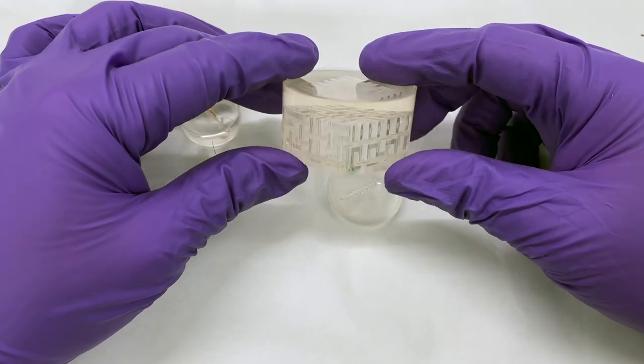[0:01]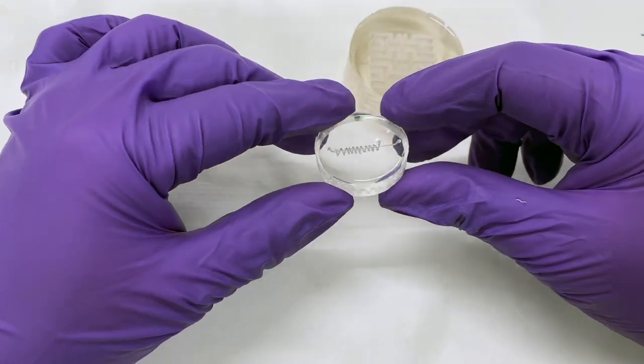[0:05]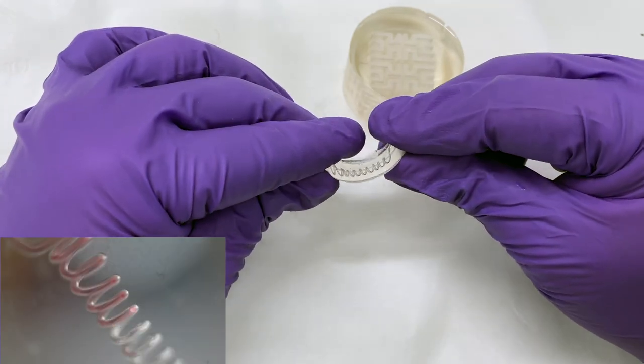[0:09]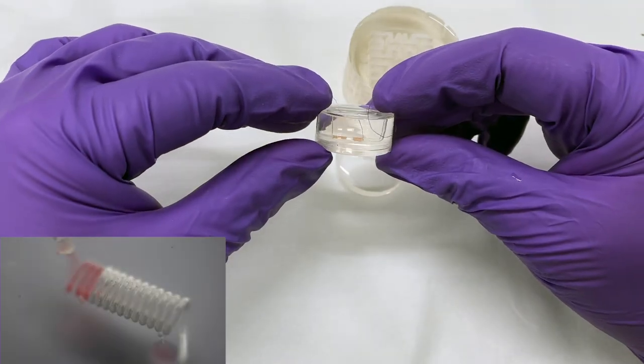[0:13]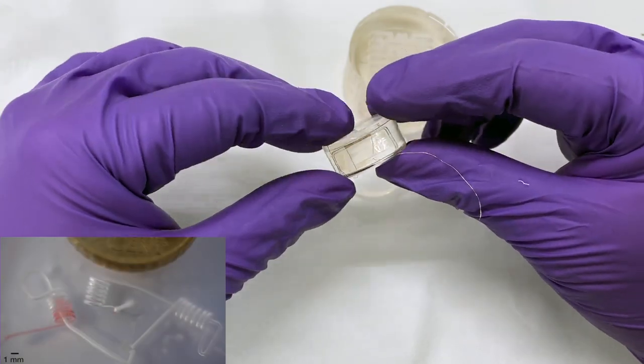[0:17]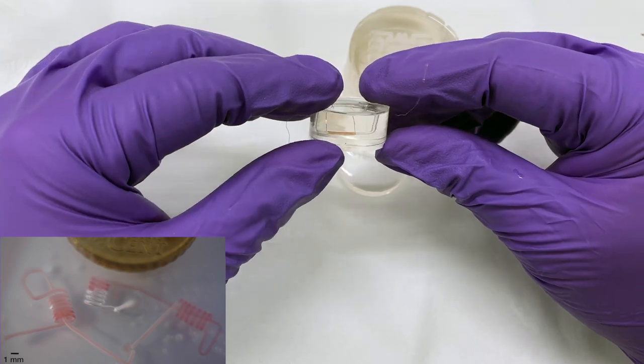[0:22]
Okay, this is a video I wanted to do for a very long time, and it's about how to make microfluidics. If you don't know what I'm talking about, you can check this video up here. Five years ago, we developed a method for making microfluidics in a very simple, easy and cheap way, in which you just need some ABS, PDMS and some acetone.
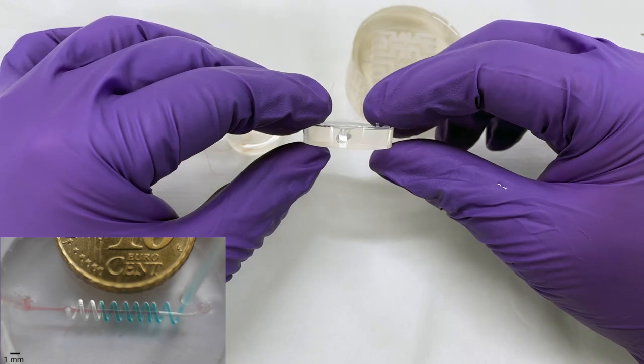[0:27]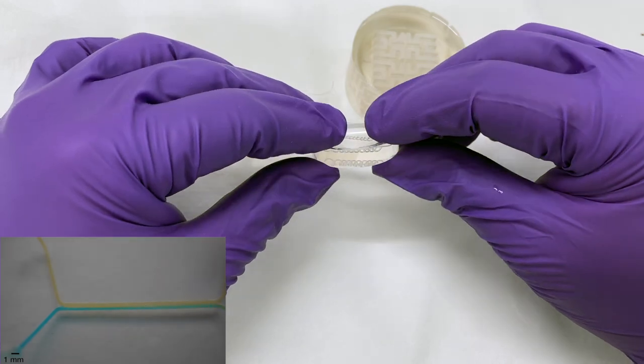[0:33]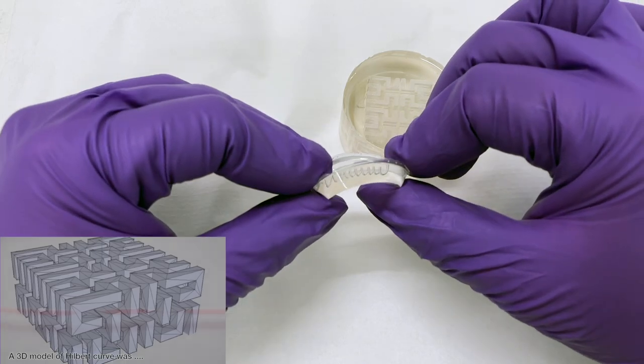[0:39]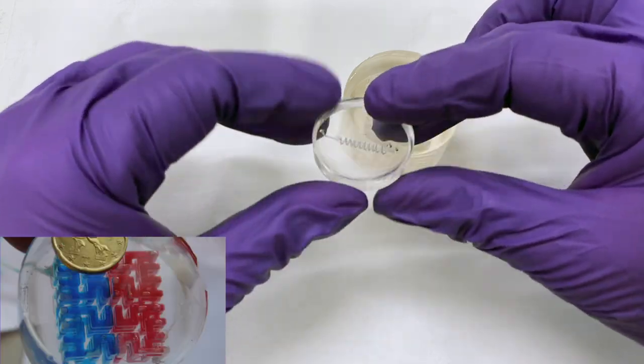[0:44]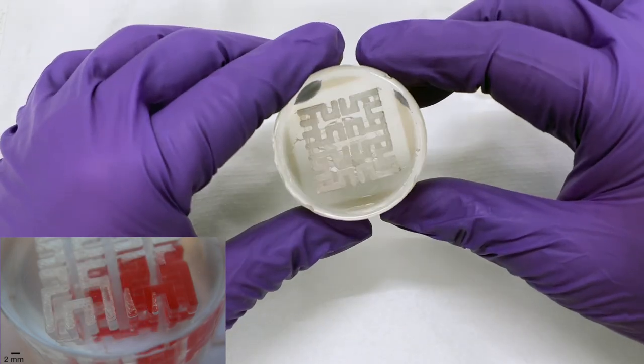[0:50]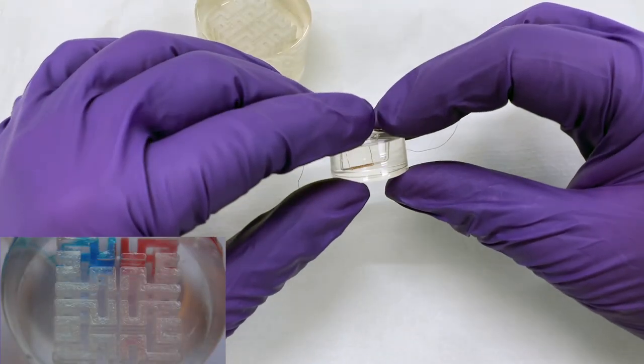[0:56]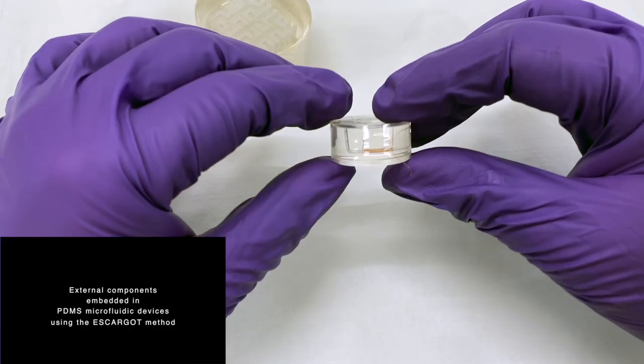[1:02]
So, the general idea is that you put some ABS in uncured PDMS, you cure it, and then you dissolve the ABS with acetone. With this method you can make a lot of 3D microfluidics, and also very intricate microfluidics. The method is very easy, and it has been used multiple times by different people, but every week I get an email asking some question on the method, so I want to make a video explaining practically everything, or at least the most frequently asked questions. So, let's go!
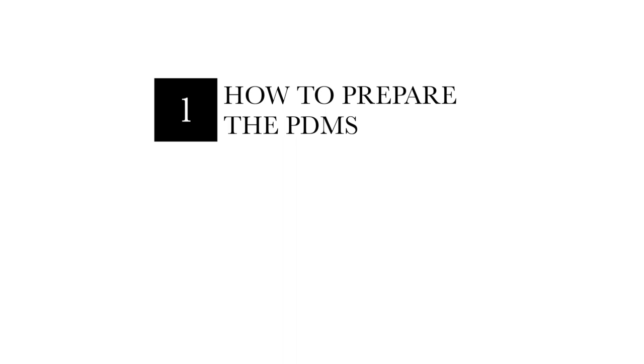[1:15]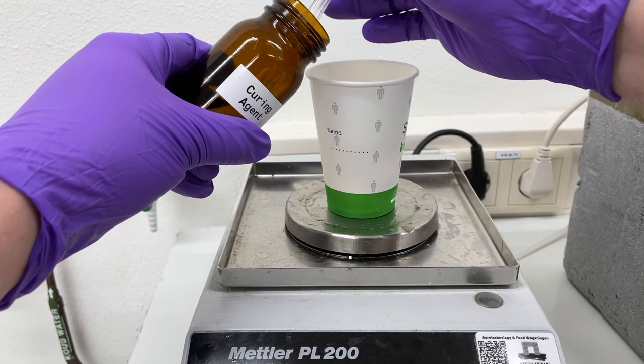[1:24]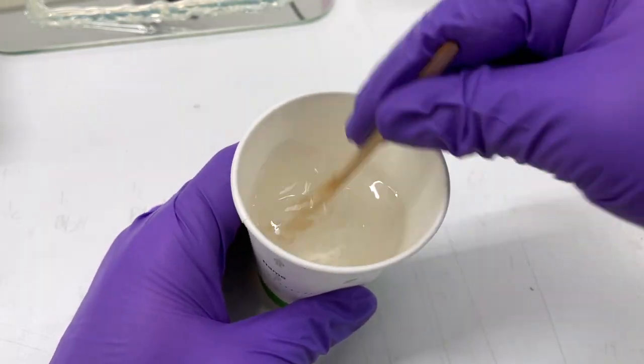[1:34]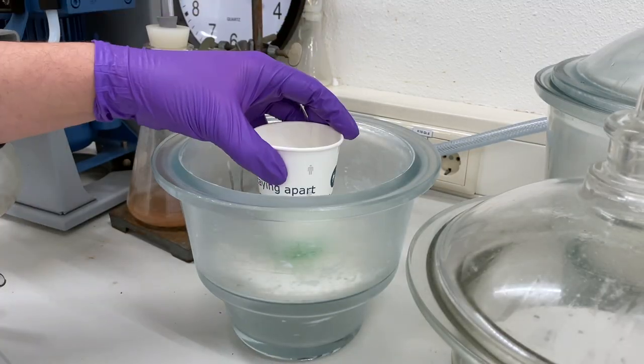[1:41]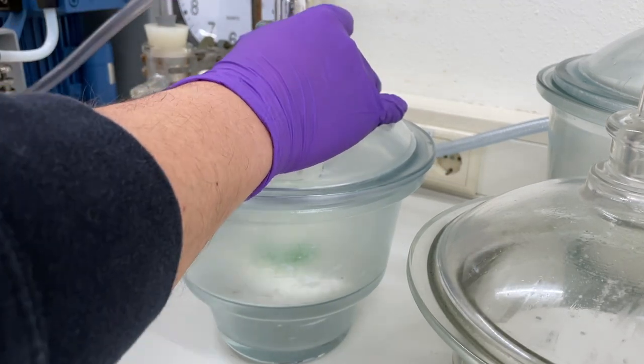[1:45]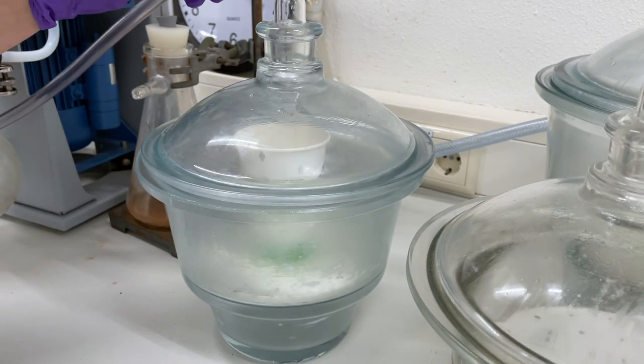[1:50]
First of all, how to prepare PDMS. You pick up your PDMS, put it in a cup, and then add your cross-linking agent. The standard is 10 to 1, so 10 parts of PDMS and 1 part of curing agent. Then you mix it very, very well for at least 5 or 10 minutes, and then you degas it. The degassing is for removing most of the air bubbles trapped in the PDMS, so your microfluidics will look clean and there are no bubbles in the PDMS.
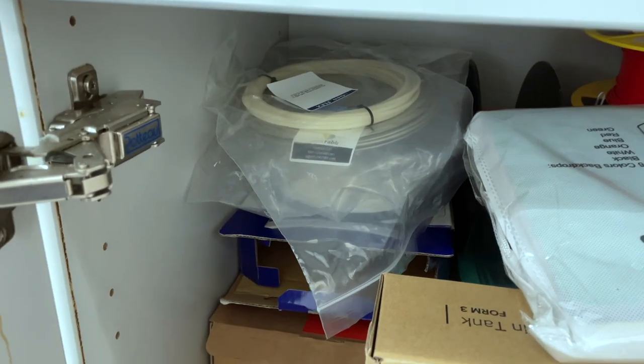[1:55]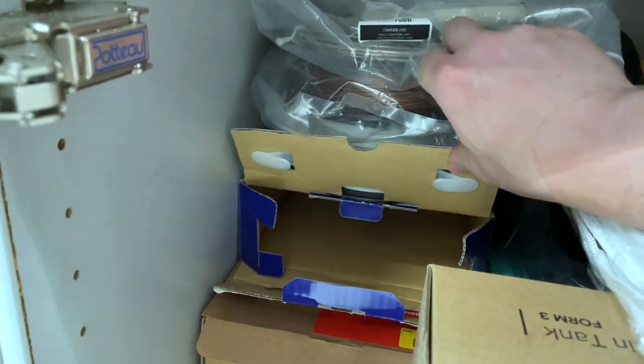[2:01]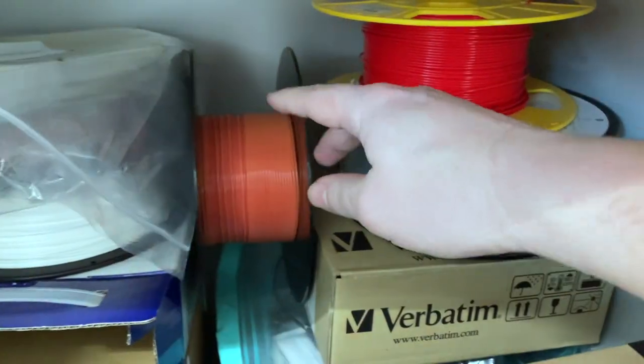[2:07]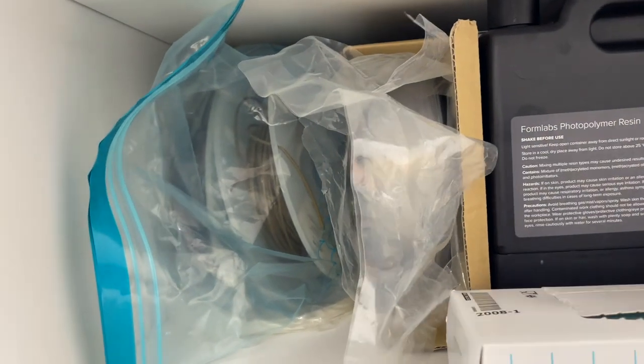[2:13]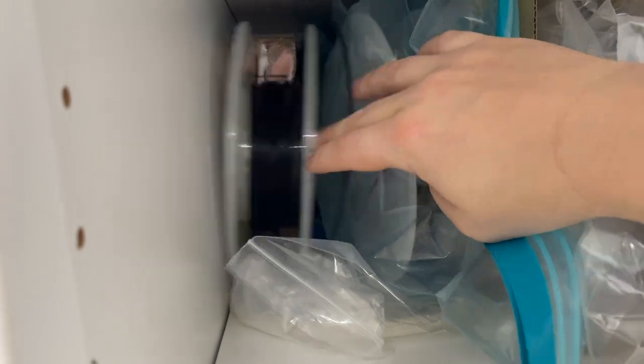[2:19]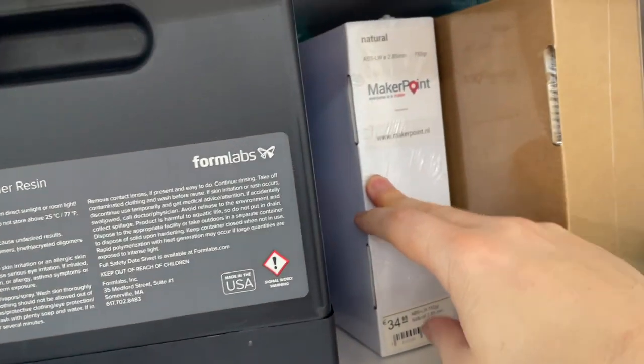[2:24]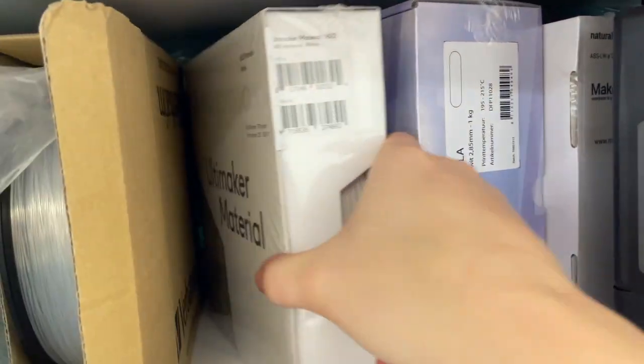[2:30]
The second most asked question is usually, my ABS doesn't dissolve in acetone. So I prepare my microfluidics, I leave it in acetone, but then nothing happens. Unfortunately, this is something we saw in the last couple of years. Producers of plastic started putting other polymers inside the ABS, so the ABS is not pure and then it doesn't dissolve anymore. As a rule of thumb, we found that the cheaper the ABS, the better it dissolves in acetone. So, if you are undecided, buy the cheapest ABS that you can find on the market.
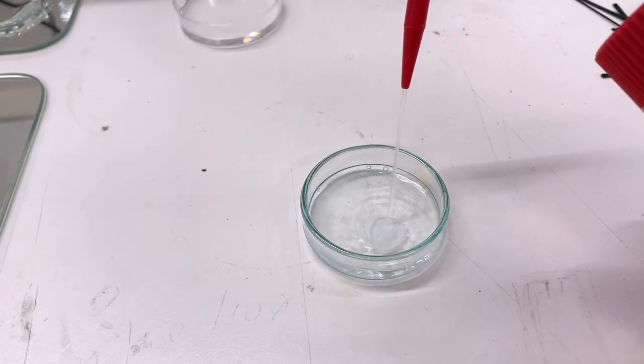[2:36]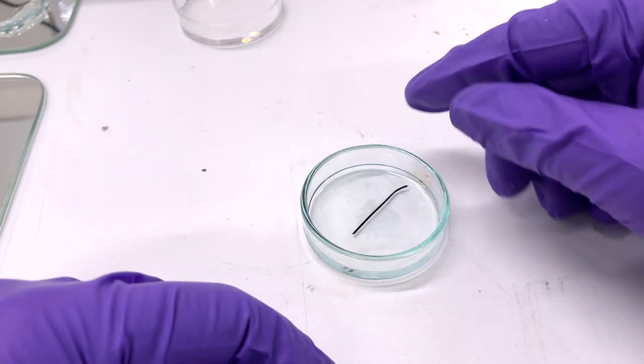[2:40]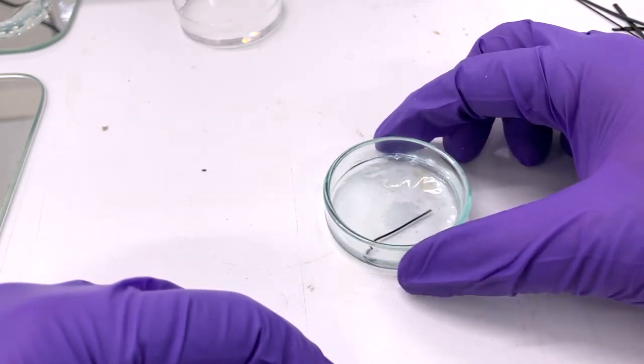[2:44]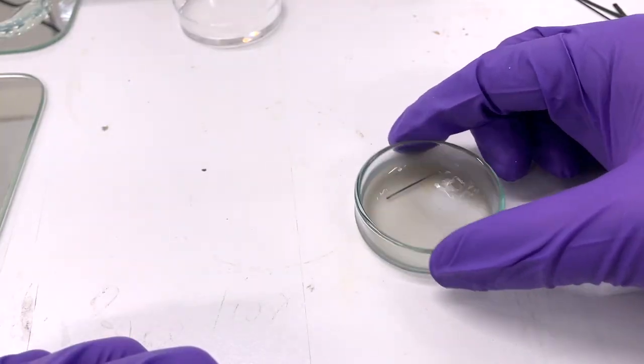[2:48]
And naturally, the easiest way to check it is to pick up some piece of ABS, throw it in acetone and check if it dissolves. If it dissolves, then you are ready to go. If not, just buy another brand of ABS. Easy peasy.
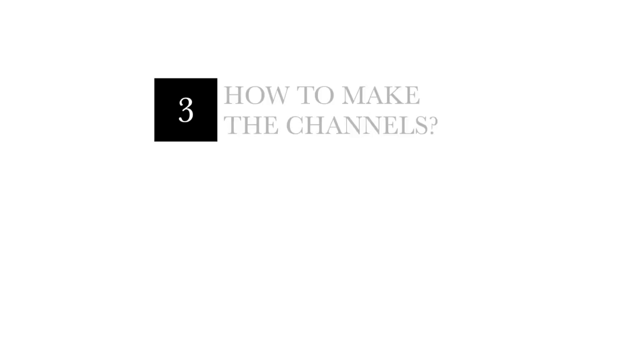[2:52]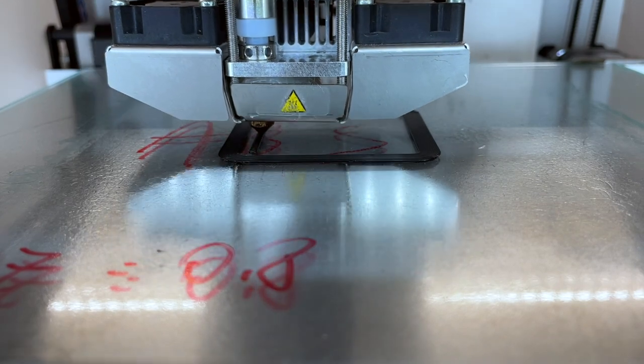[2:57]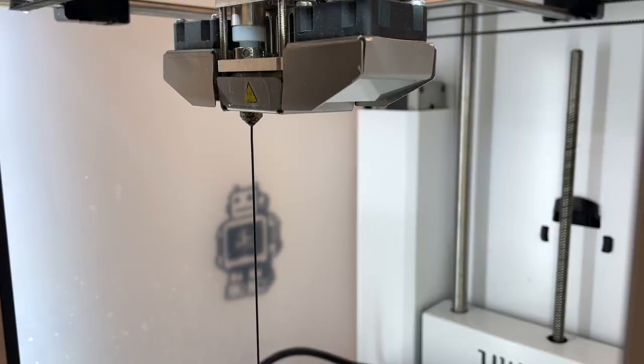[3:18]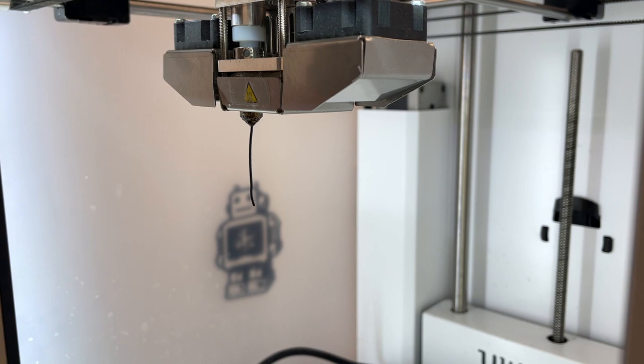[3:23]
Then, how to make the microfluidics design. This method was born for use with a 3D printer and ABS, so naturally the first thing is that you can 3D print it. If you can design it, then you can just 3D print it in ABS and use it as it is. But there are some other methods, let's see. For example, you can just extrude the material through the nozzle and you can have different sizes. If you are using a 0.6 mm nozzle, you will have roughly a 0.6 mm channel, but you can also go for 250 microns or 1 mm.
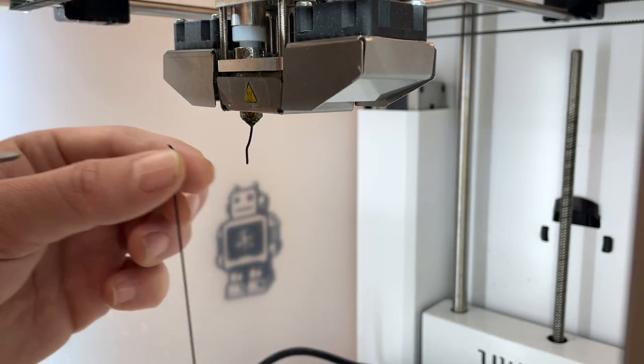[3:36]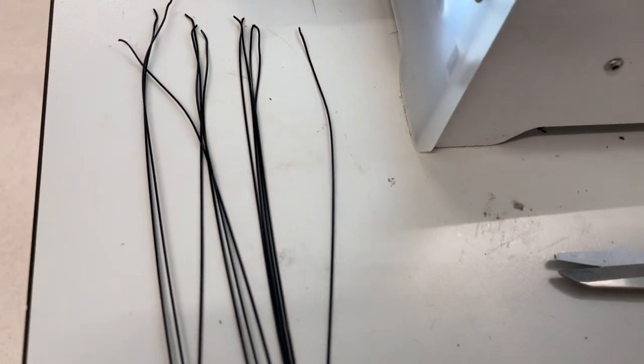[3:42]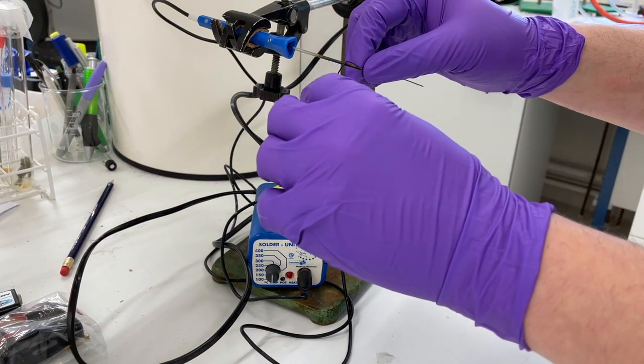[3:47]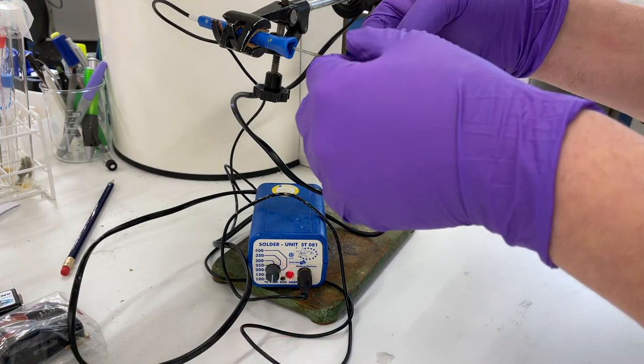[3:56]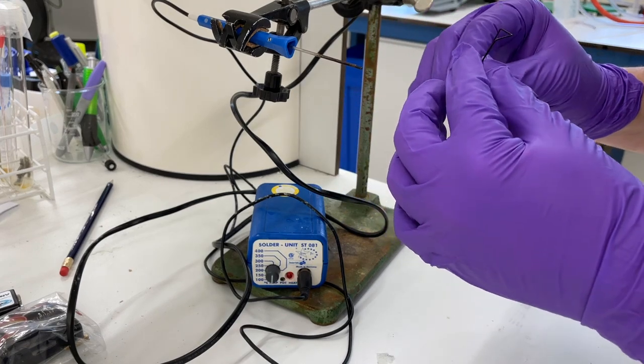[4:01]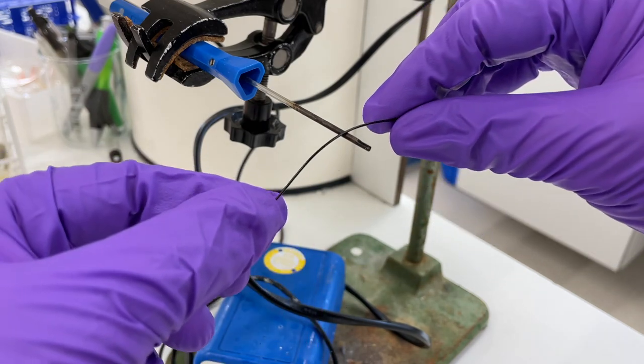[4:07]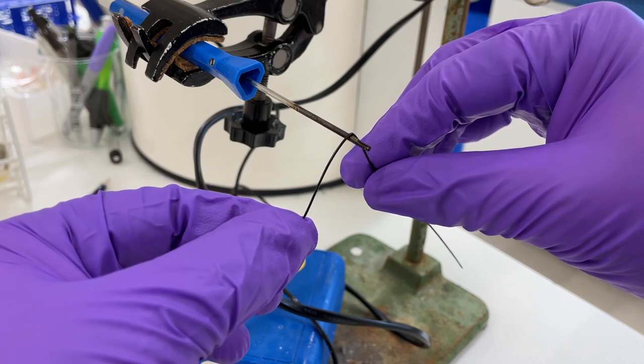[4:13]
In this case I'm just extruding the material, cutting different lines and letting them cool down. Once I have my extruded filament in the diameter that I want, I can use a soldering iron at the lowest possible temperature for making my design. I'm just using the heat for shaping the channel that I want. This is important because if you just bend the ABS and then put it in the oven in PDMS, it will go back to its initial state. So you want to melt it a little bit to give the proper shape to your channel.
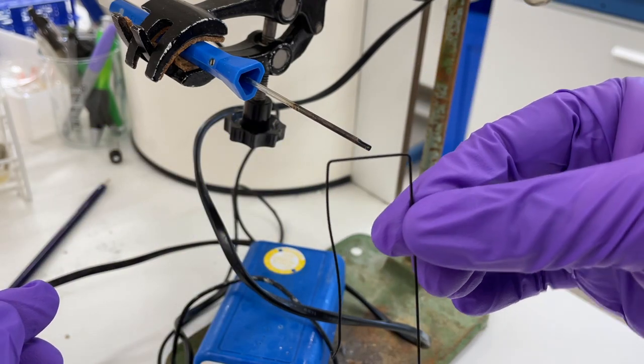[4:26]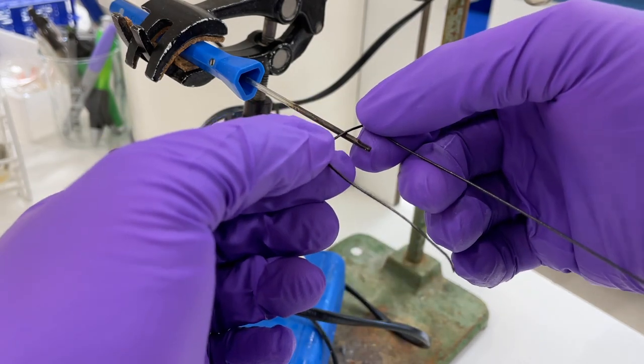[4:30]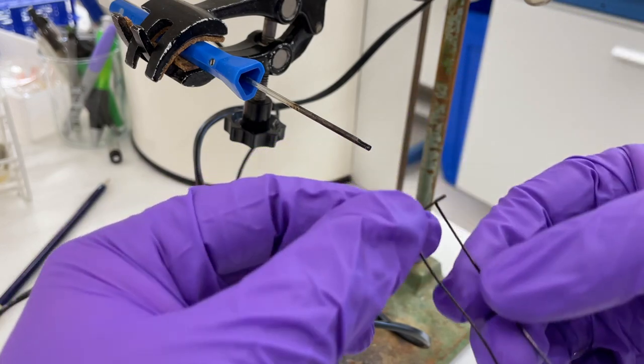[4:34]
In this case, I'm just warming it up to 100-120 degrees. Then I pick up my filament and make some curves. Once it melts, it will stay in that position even in PDMS and in the oven. And this is what you want to have.
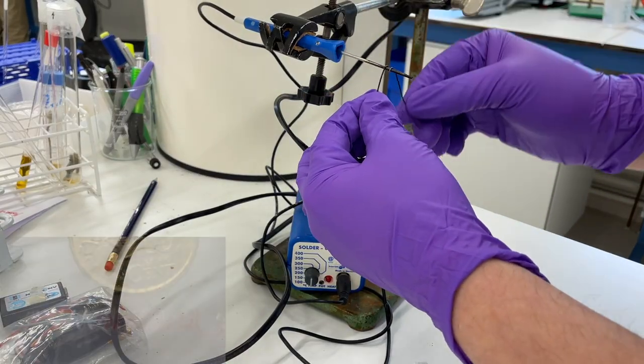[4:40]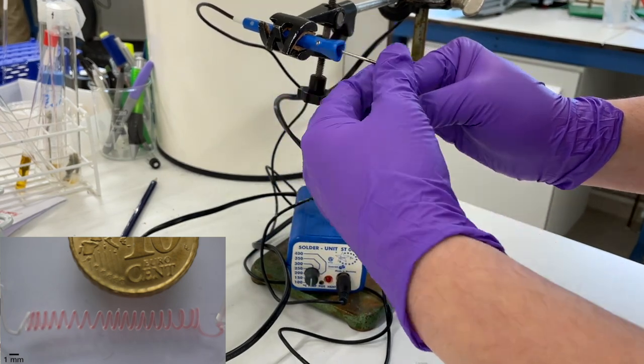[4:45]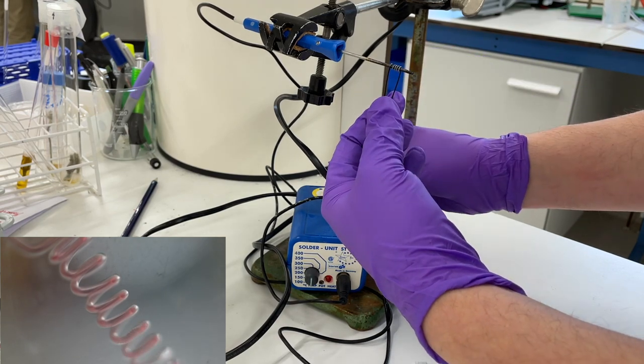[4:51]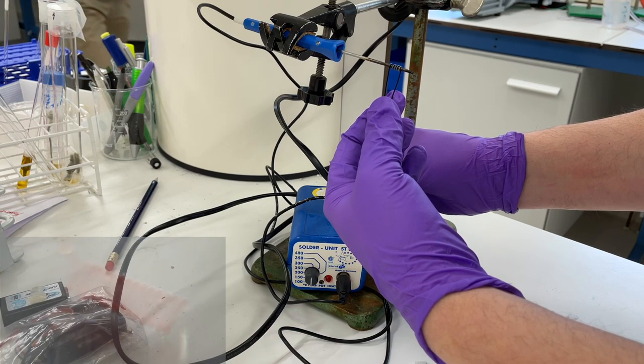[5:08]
Many people ask how we manage to make the coil microfluidic device. In this case, I'm still using the same soldering iron. I make the coil on top of a cold soldering iron, then I turn on the heat and wait until it gets the shape that I want. In this case, it's a coil. When it melts, I keep the ABS in the same position and turn off the soldering iron. I wait a little bit until everything is cooled down and I have my final shape.
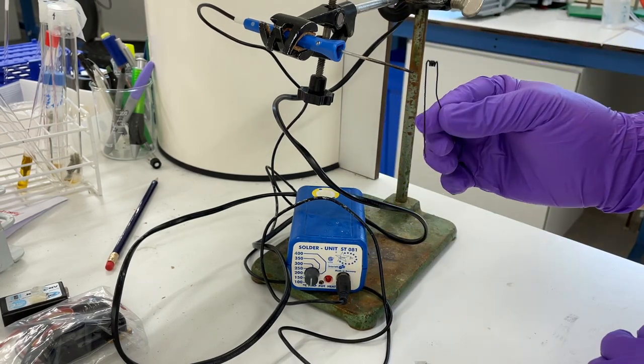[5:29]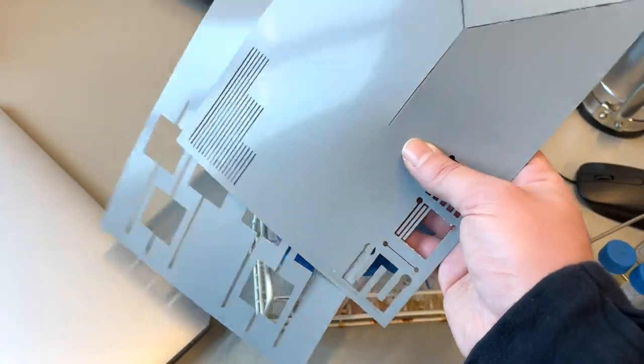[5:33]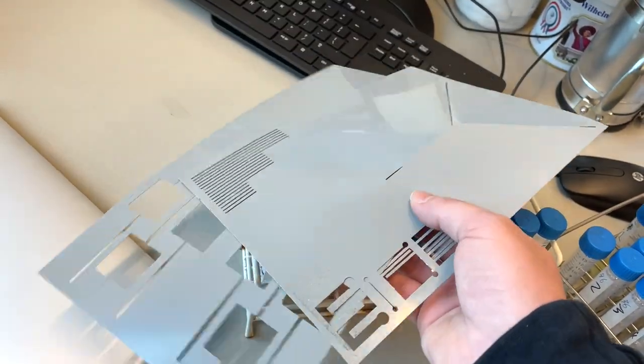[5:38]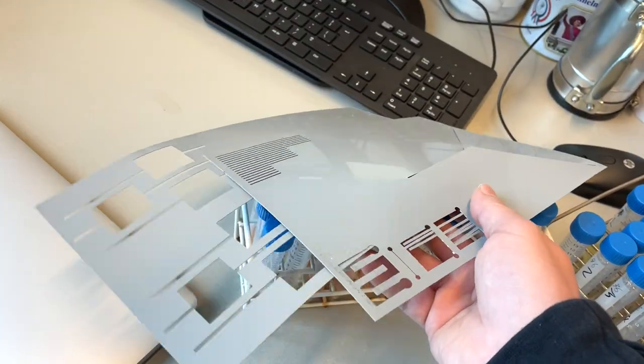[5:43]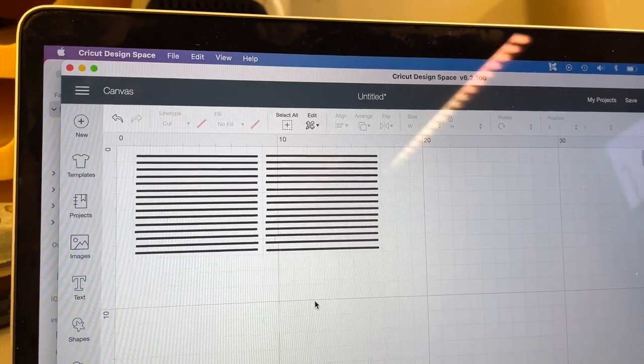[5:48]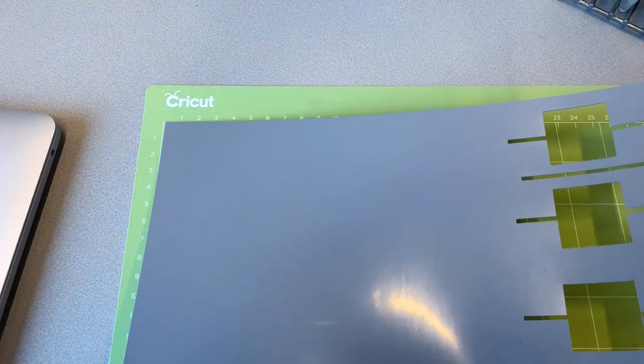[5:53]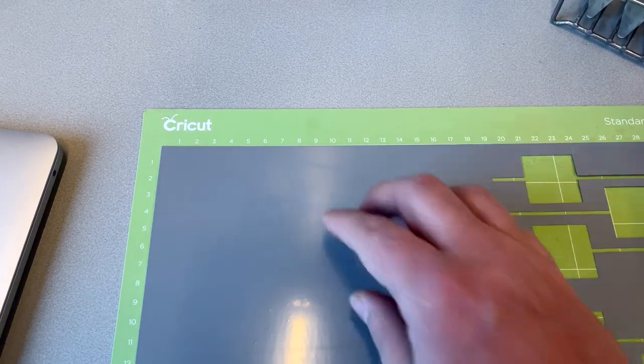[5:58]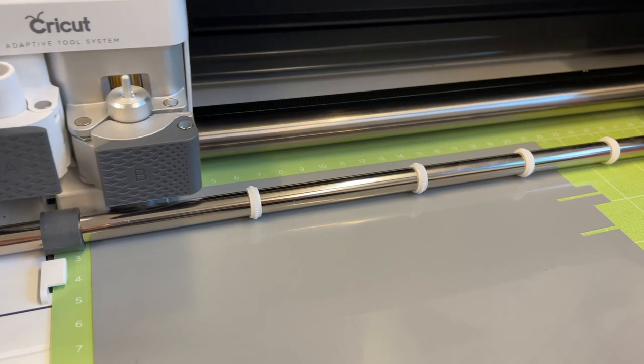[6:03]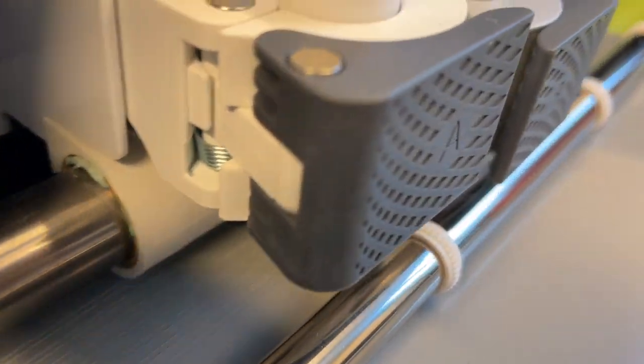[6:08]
There is yet another method, and it's using a cutter. You can buy flat sheets of ABS, and you can just use a cutter for making your design. I'm using a Cricut, so I design my microfluidics, then I attach the ABS foil on the Cricut build plate, let's call it build plate. I attach it properly, and then I put it in the machine for cutting. This is just a normal cutting machine, nothing special here.
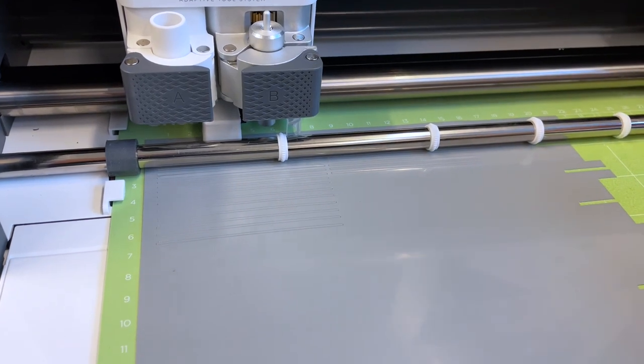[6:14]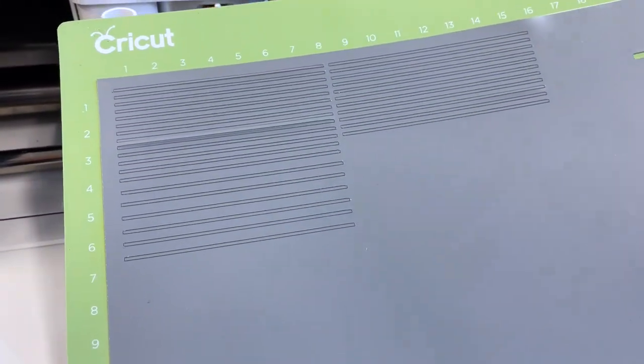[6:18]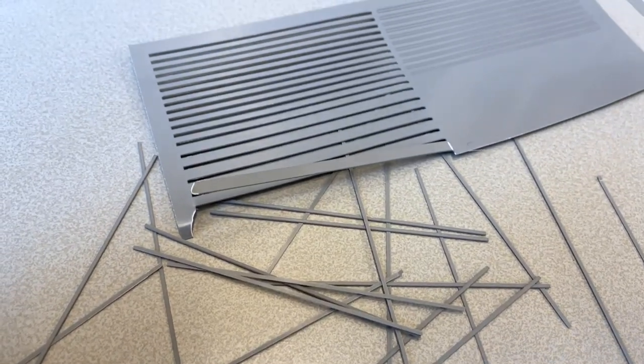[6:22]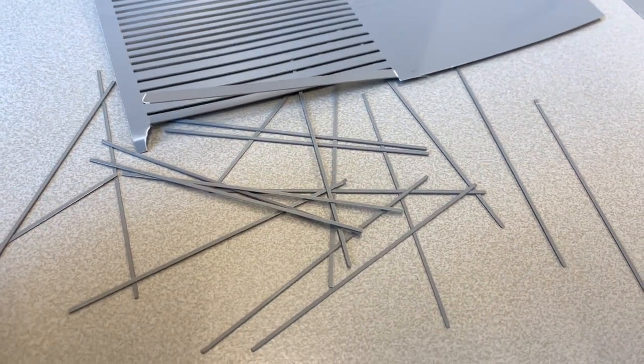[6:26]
Once it's finished, I can remove my build plate, detach the single channels, and here you have your ABS channels, and then you can go on with the same method. You put it in PDMS, you cure it, and you remove it with acetone.
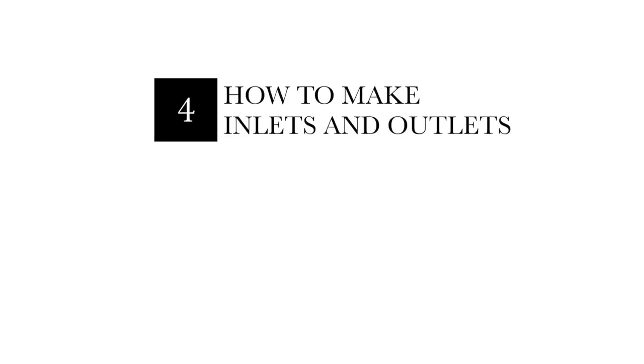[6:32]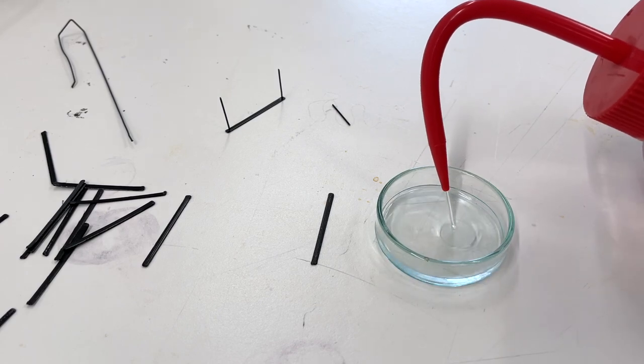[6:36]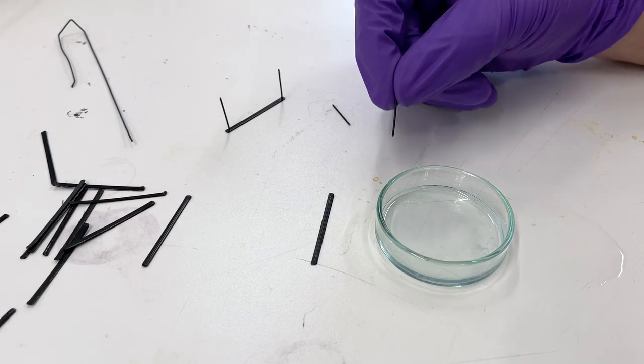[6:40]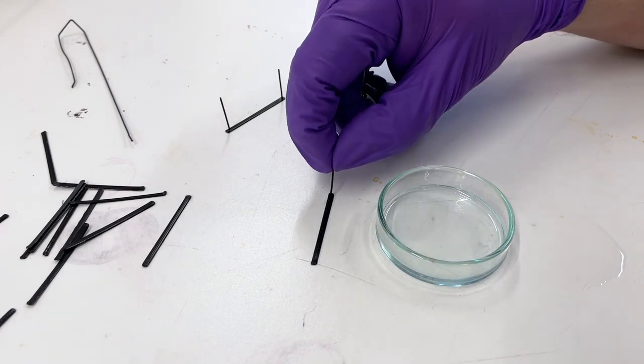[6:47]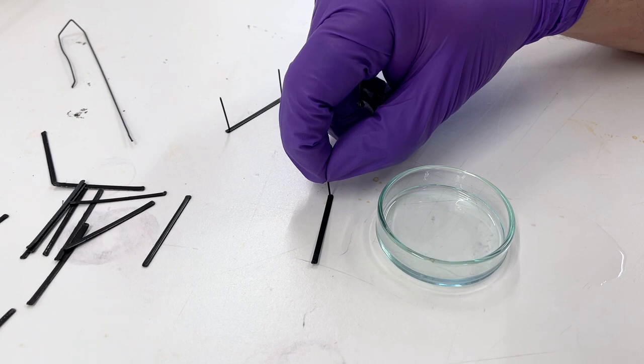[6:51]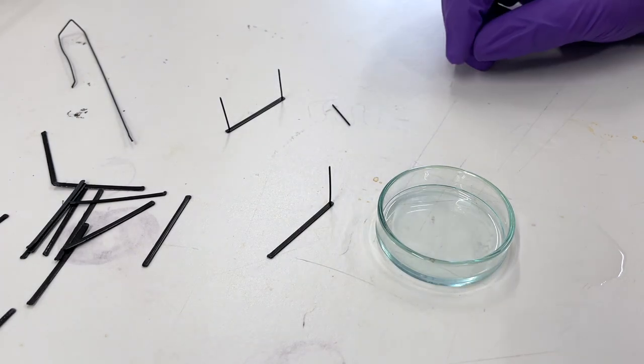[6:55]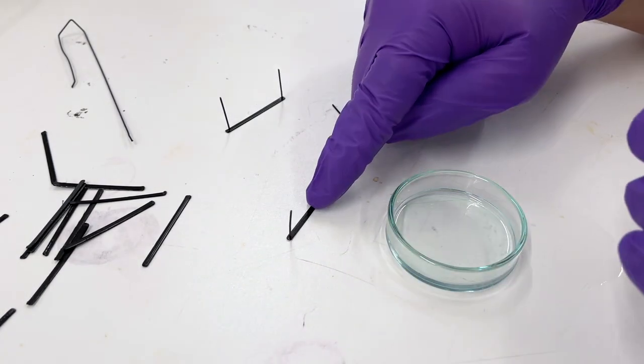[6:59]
Then, how to make inlets and outlets if you didn't print them? It's still possible, and there are a couple of options. You can use acetone for fusing two different pieces of ABS. I have a line here, I'm using a little bit of acetone, and then I'm just pushing it onto the microfluidics, or the piece that will be the microfluidics. You can see, it's attached now. I can do the same thing for the outlet.
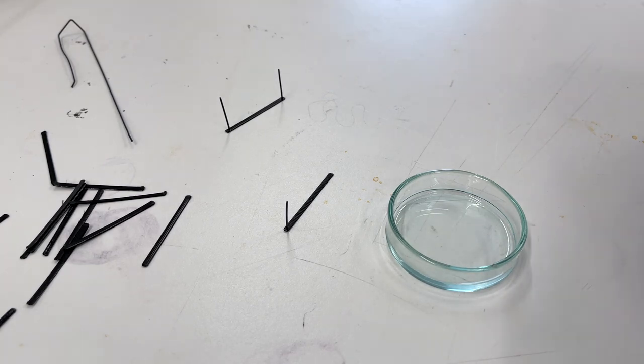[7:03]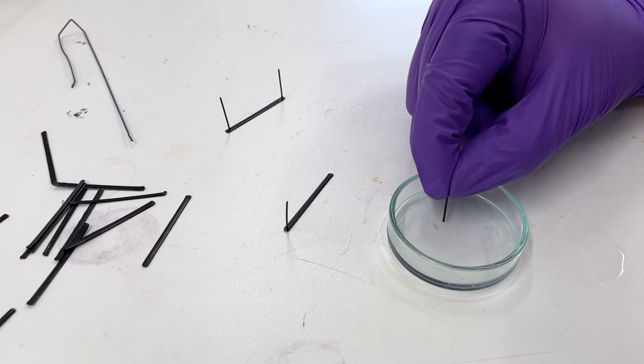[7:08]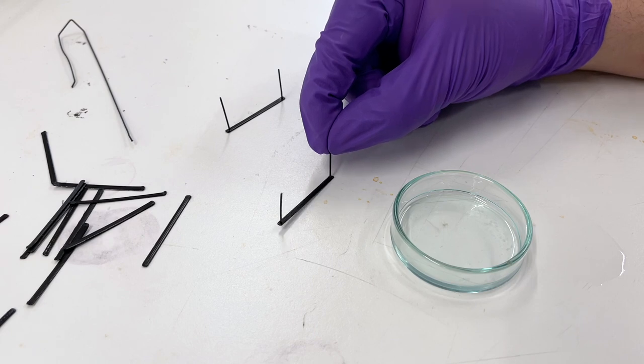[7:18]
I'm picking up a little bit of ABS, I use acetone to dissolve it a little bit, and then fuse it together with the design. You need to wait 5 or 10 minutes for all the acetone to evaporate, and then you can use this design for making the microfluidics.
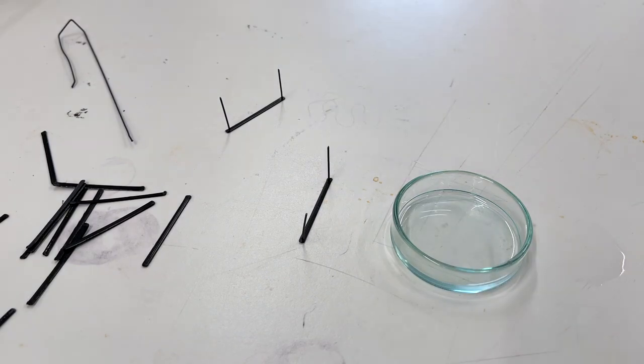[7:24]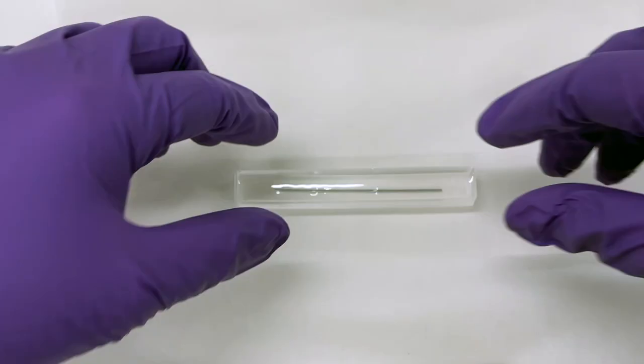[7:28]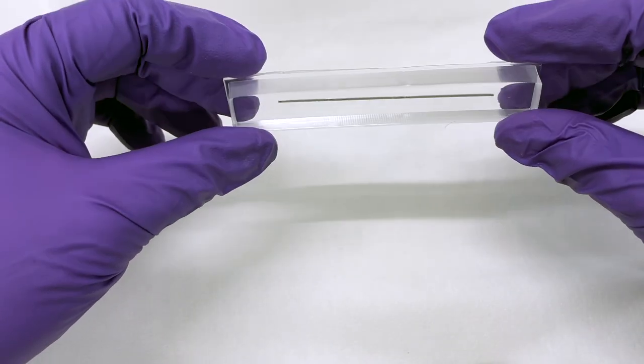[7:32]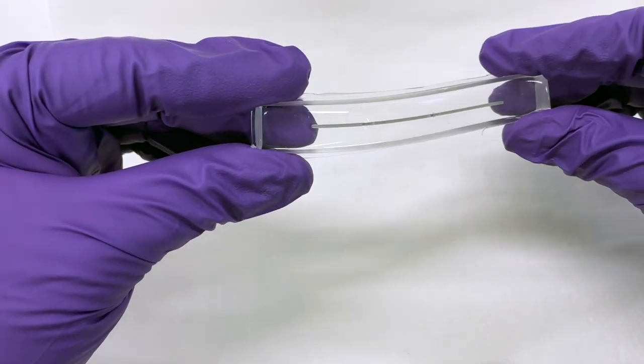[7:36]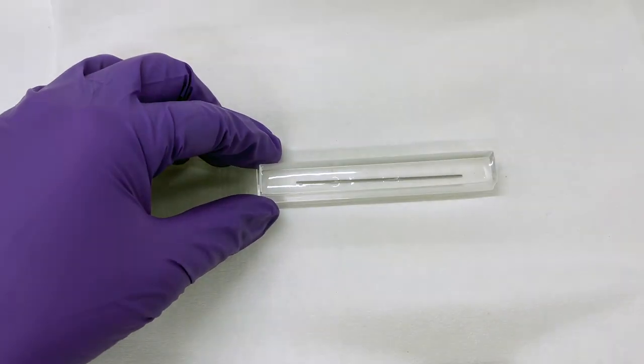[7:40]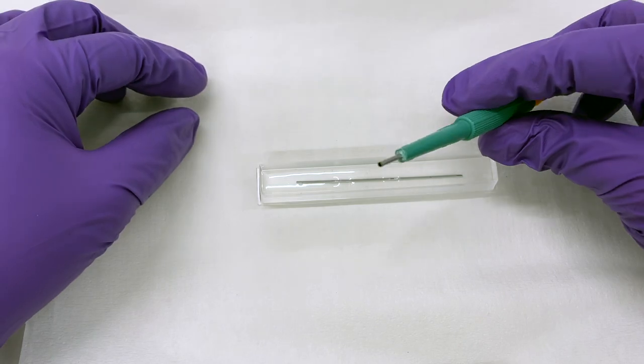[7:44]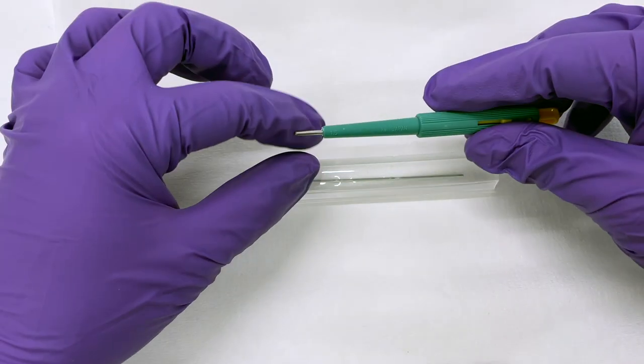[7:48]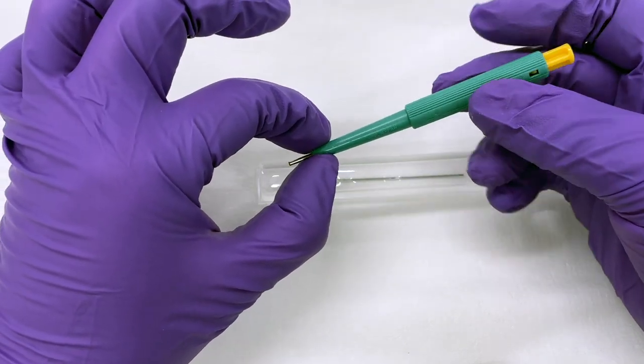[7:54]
For the second one, we have already microfluidics inside, so the ABS part inside the PDMS cured, but no inlet or outlet. So how to do it in this case? You can use what it's called a biopsy puncturer. So this is something for puncturing something cylindrical, and then you can remove the PDMS by pressing the button here.
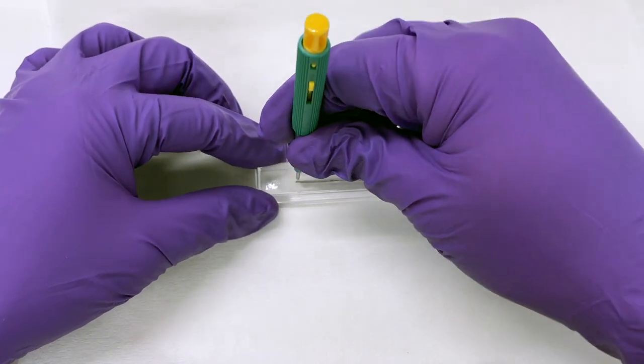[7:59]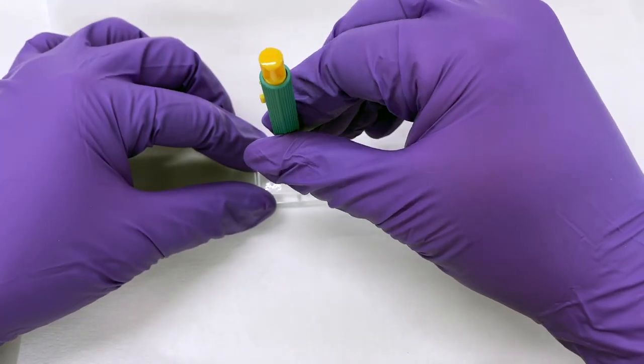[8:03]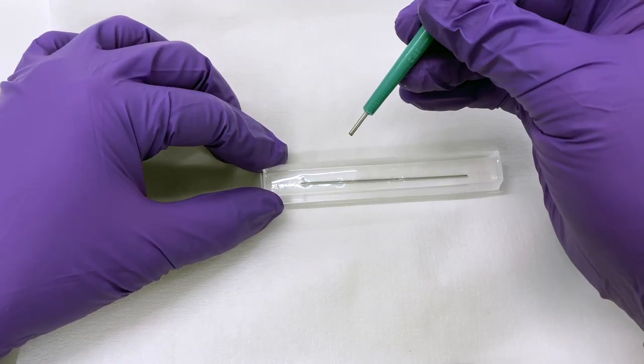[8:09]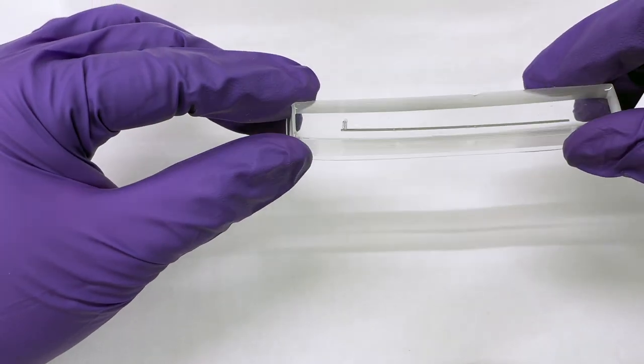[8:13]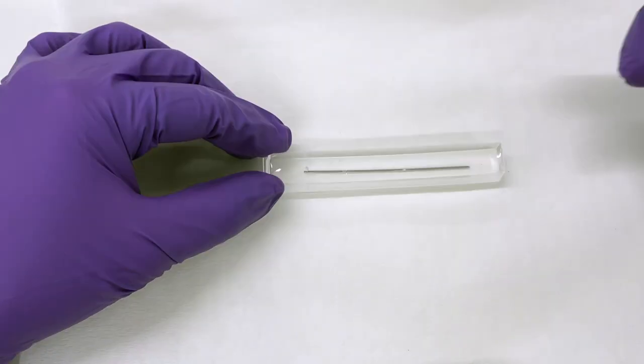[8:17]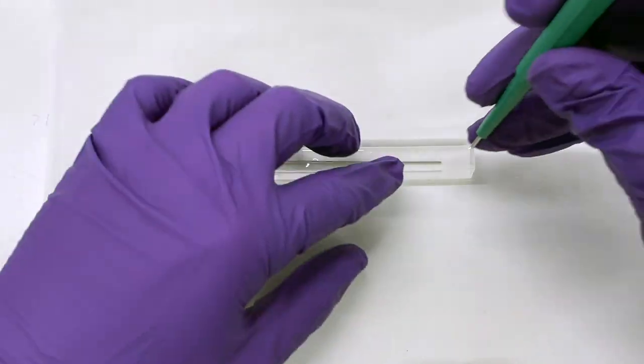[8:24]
So I align the puncturer with my design. I press it down for cutting the PDMS until I hit the ABS. Then I twist it a little bit, I remove it, and then I press down for removing the cylinder of PDMS. And now I have my inlet. Those puncturers are coming in different sizes, so if you have different tubing, you can buy one that it's 1 millimeter, one that it's 0.8 millimeter, or bigger sizes.
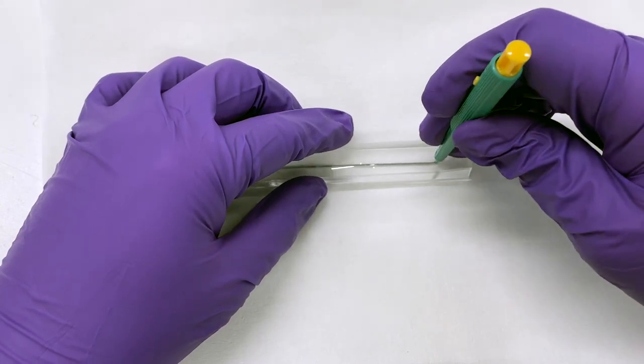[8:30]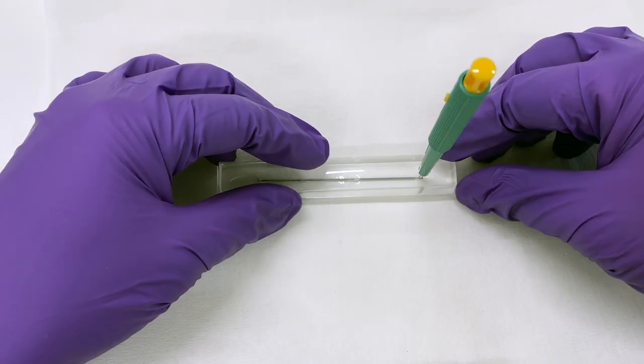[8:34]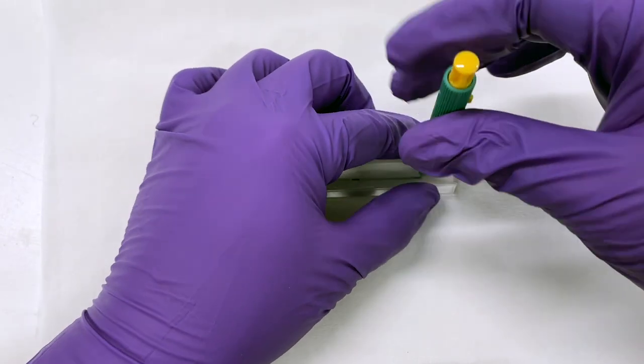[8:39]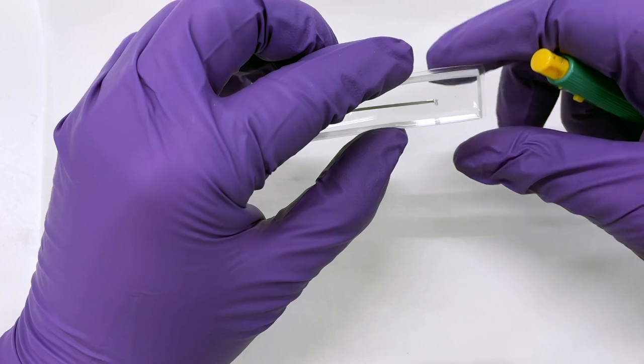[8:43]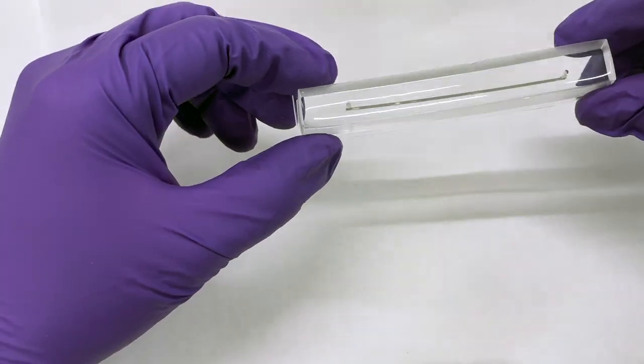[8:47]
For the outlet, it's practically the same thing. I just push it down until I reach the ABS part. I twist it, and then I remove this cylinder of PDMS. And that's it. I now have my inlet and outlet. I just throw it in acetone. I will dissolve the ABS, and I will have my final microfluidic device.
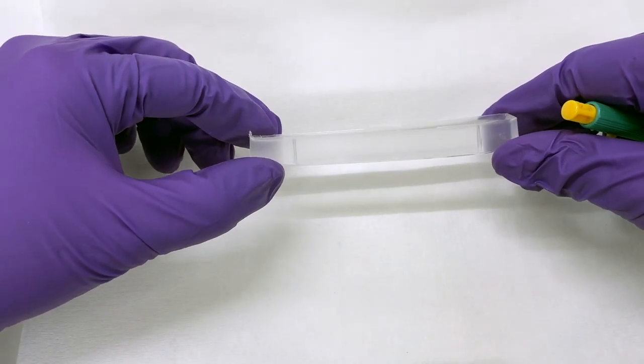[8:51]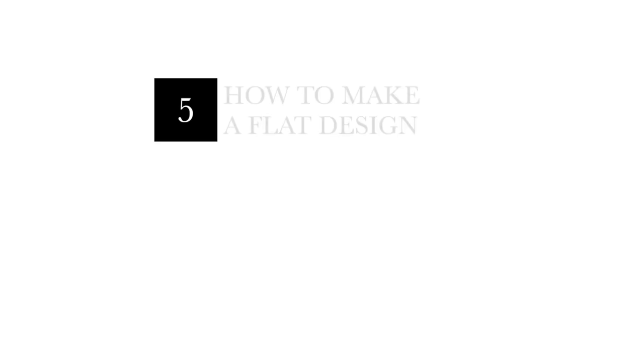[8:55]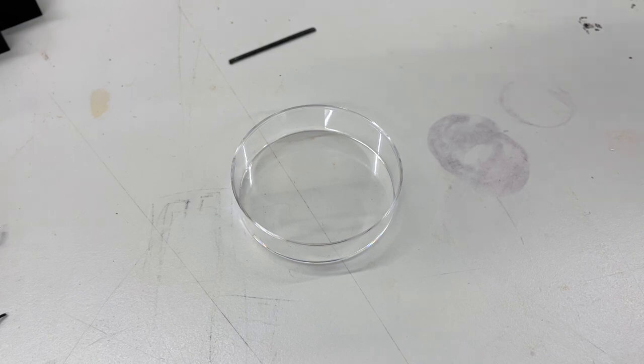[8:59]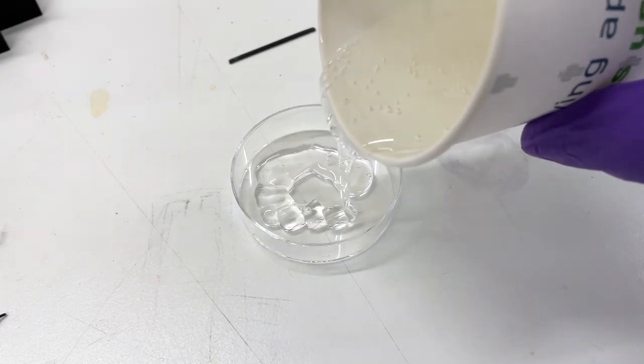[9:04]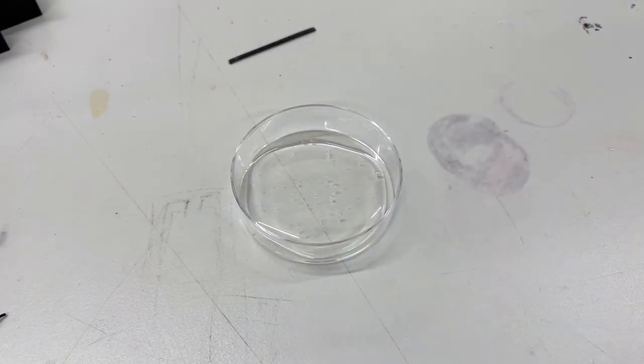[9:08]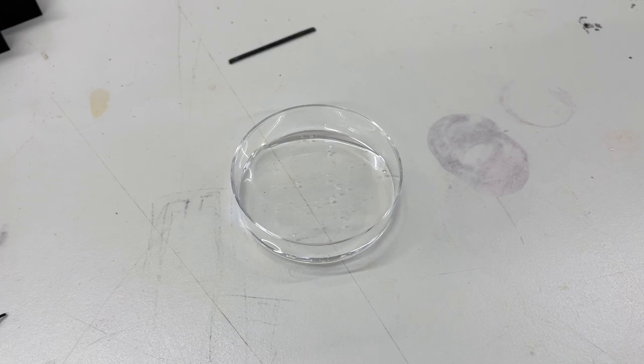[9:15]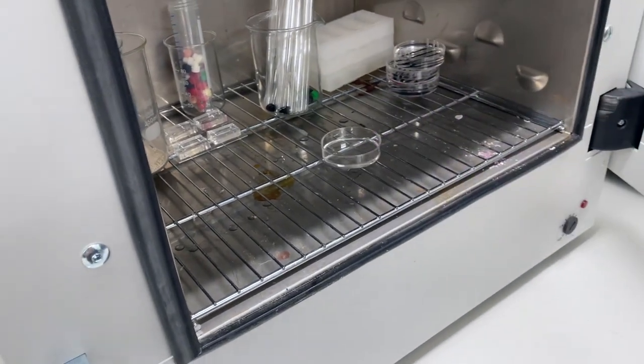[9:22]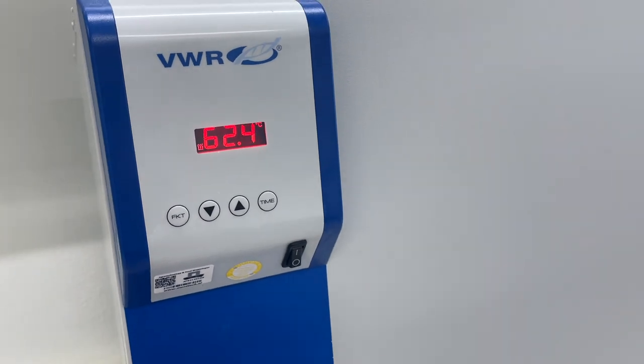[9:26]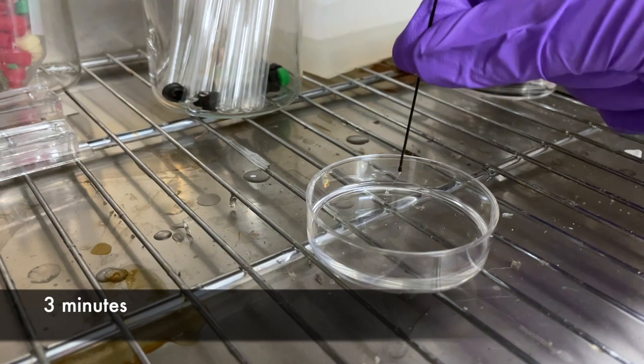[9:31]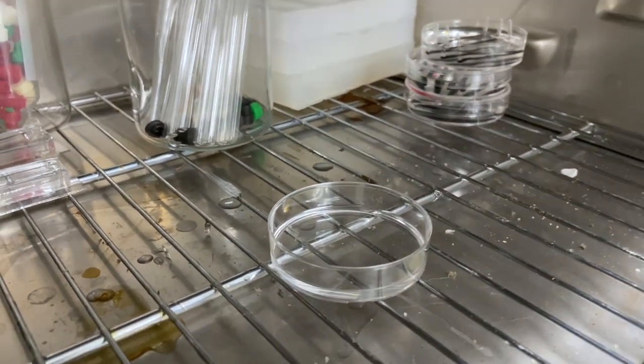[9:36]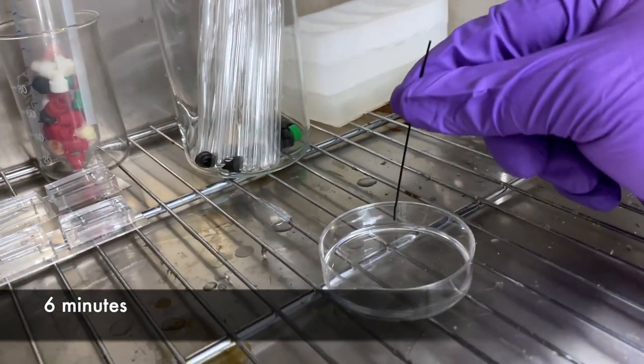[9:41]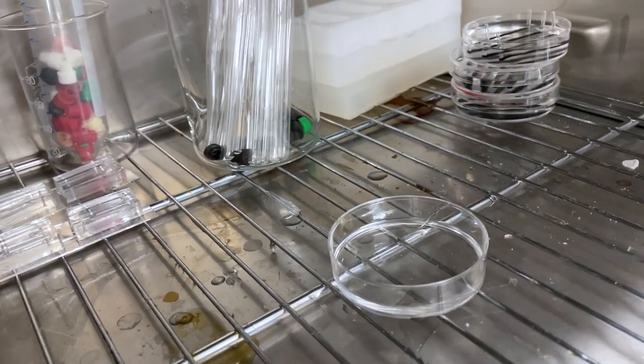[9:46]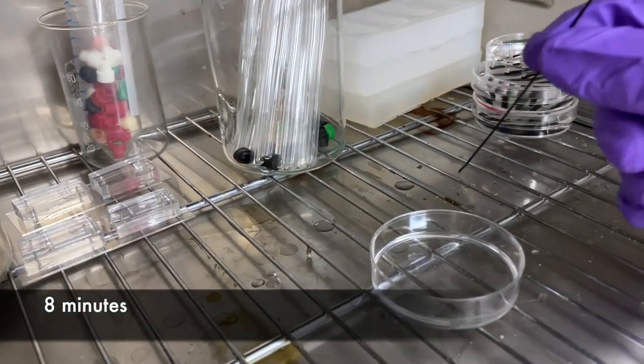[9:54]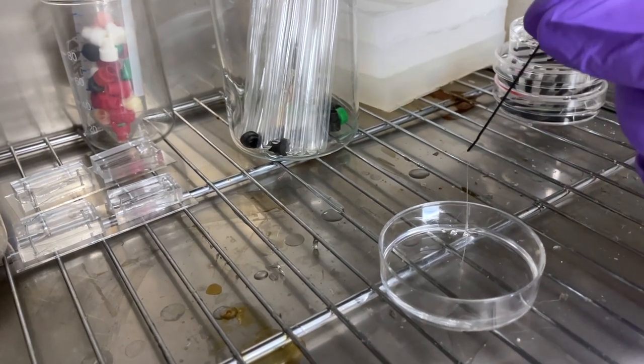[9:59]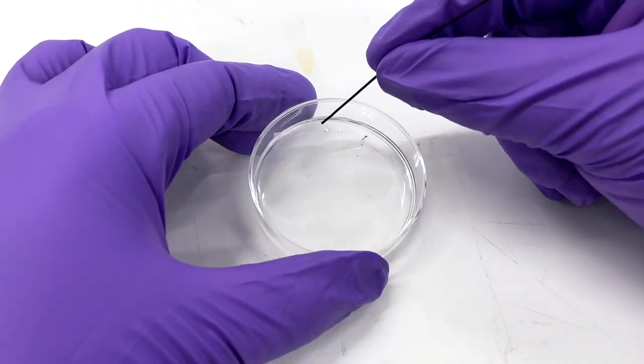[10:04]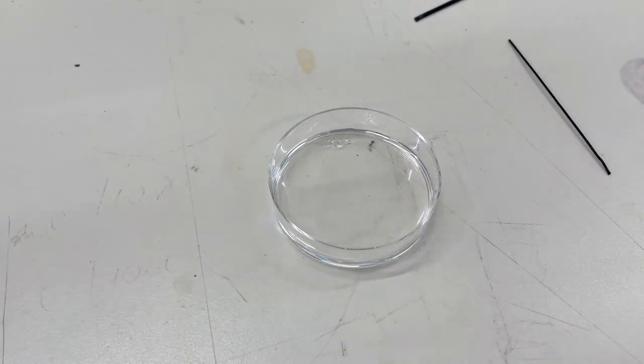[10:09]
After a while, you start checking if the PDMS starts curing. So just poke the PDMS and check if it's liquid or it's becoming a little bit more solid. What you want to achieve here is something that is not fully cured, but it's also not liquid anymore. So you can see that during time, at least 7-10 minutes, this is the consistency that you want to get. So it's very sticky, it's not fully cured, and this is what you want to have. You can see here that the PDMS is super sticky, but it's not completely cured.
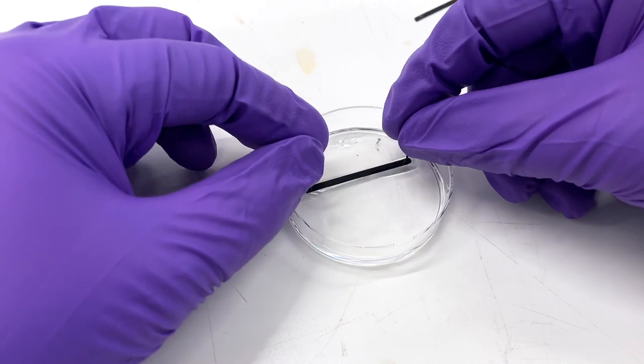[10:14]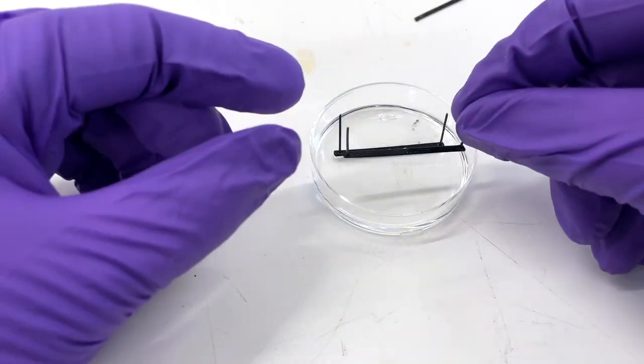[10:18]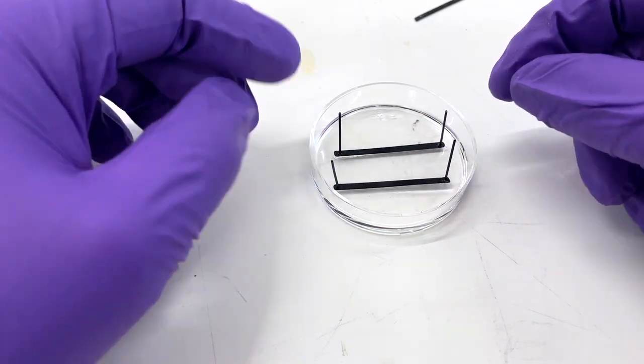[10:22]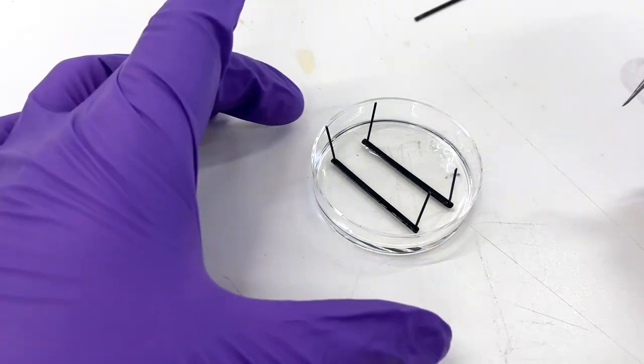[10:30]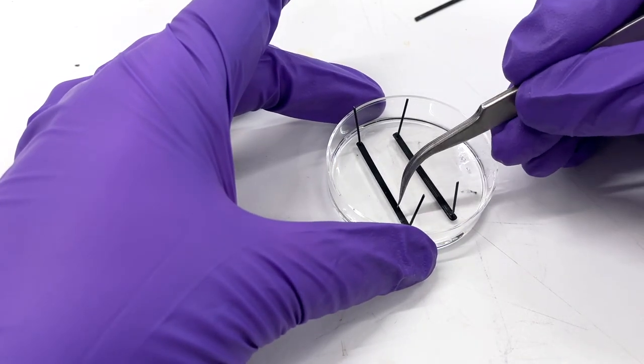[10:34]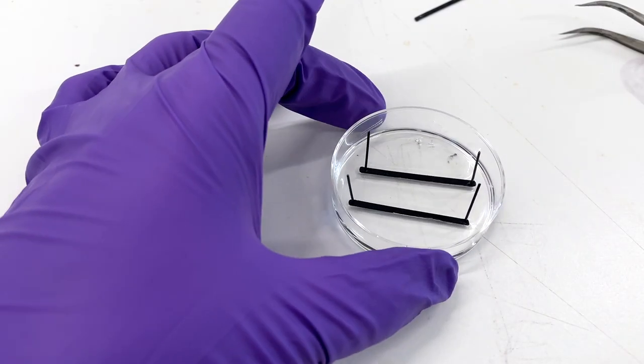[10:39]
This means that if I put something on top, it will not sink down and it will be stuck on the PDMS. For example, I have my design, I now put it in there, I push it down a little bit for making a good contact with the PDMS, and then I pour more PDMS on top. In this way, I know that my design is going to be completely flat, will not have bubbles on the bottom part, and I can cure PDMS on top.
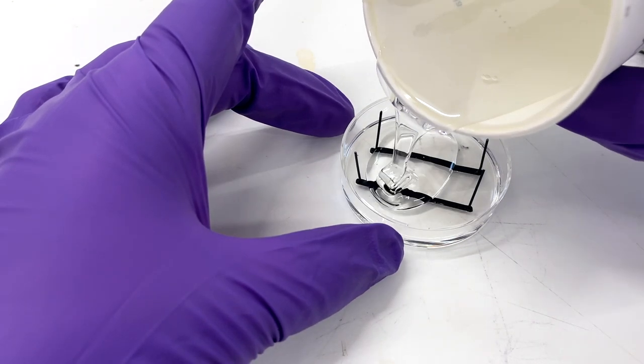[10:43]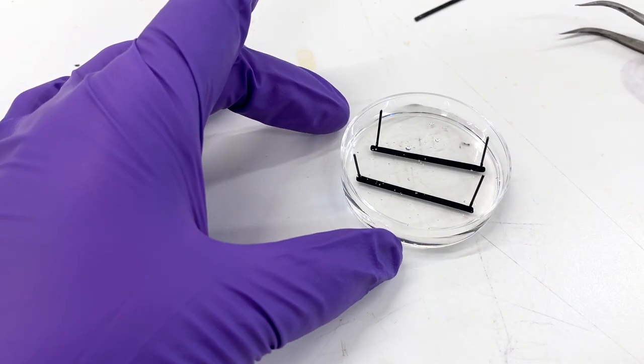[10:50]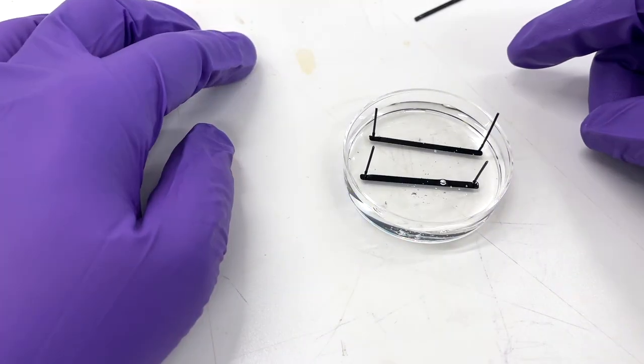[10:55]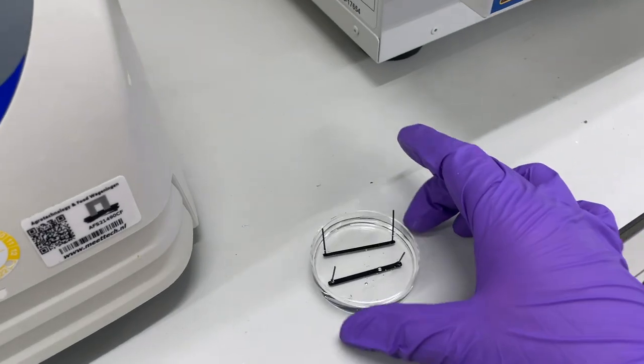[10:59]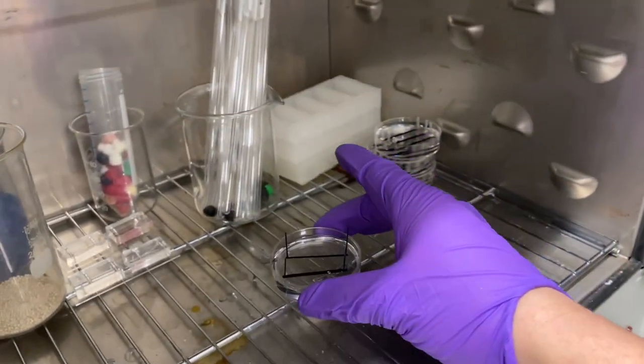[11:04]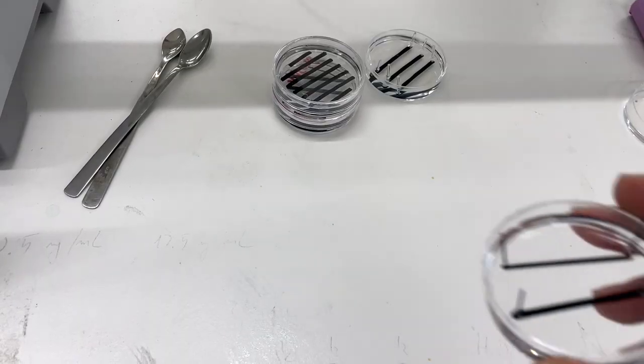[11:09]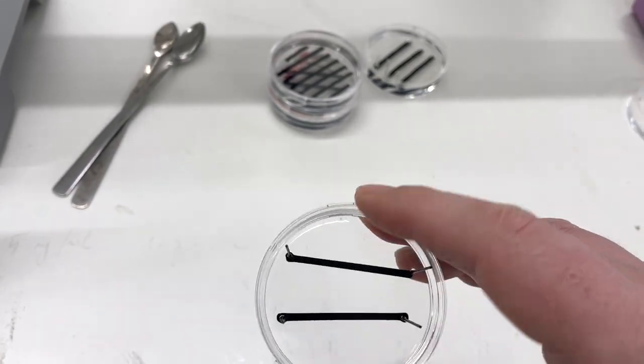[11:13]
So the trick is to have something sticky but not completely cured. If the bottom part is completely cured, it will not attach to the PDMS that you put on the top. So you want to have sticky, put your design, put some more PDMS on top, and then throw it in the oven again. Once it is cured, you will have your design that is flat, doesn't have bubbles, and it's perfect. This is your final design. Now just throw it in acetone and it's done.
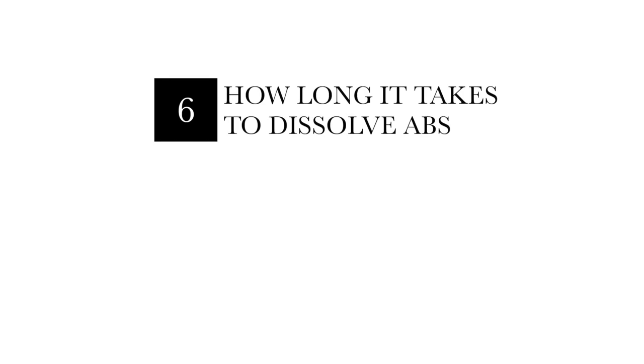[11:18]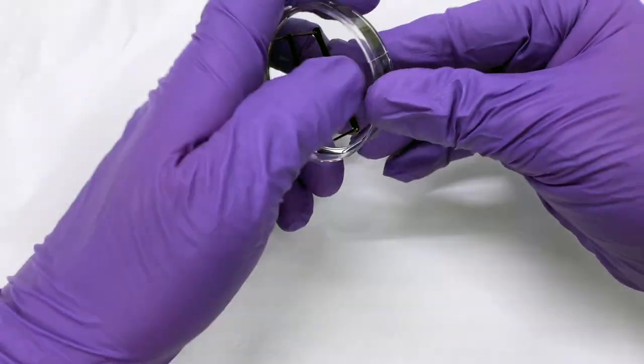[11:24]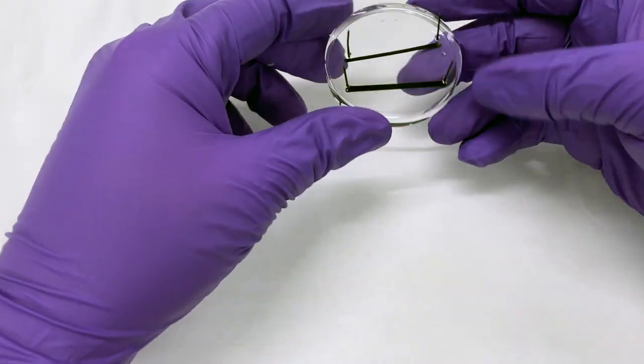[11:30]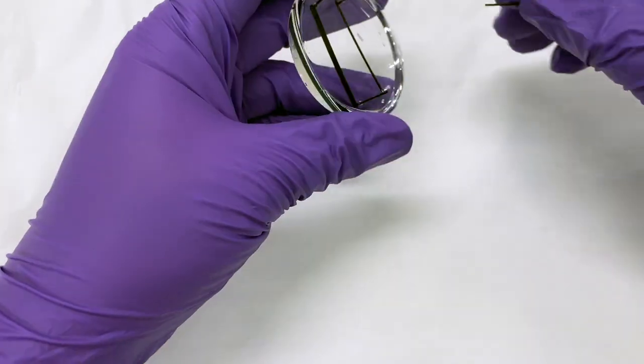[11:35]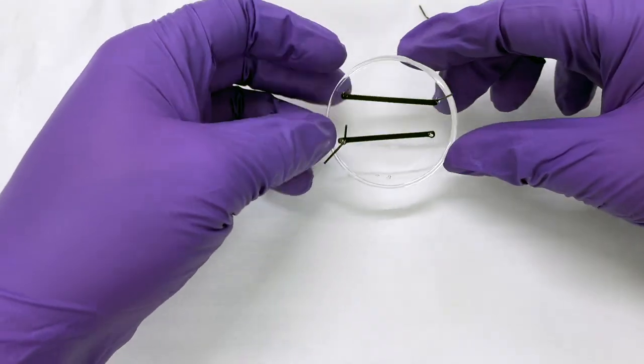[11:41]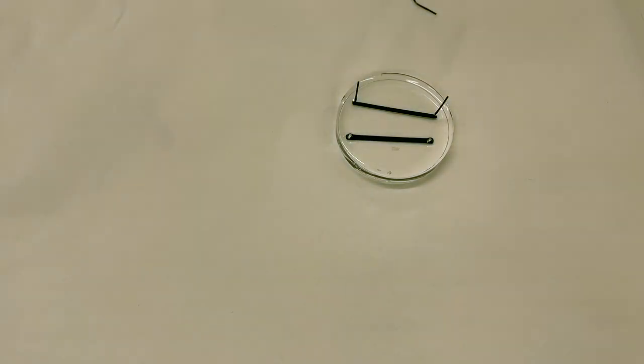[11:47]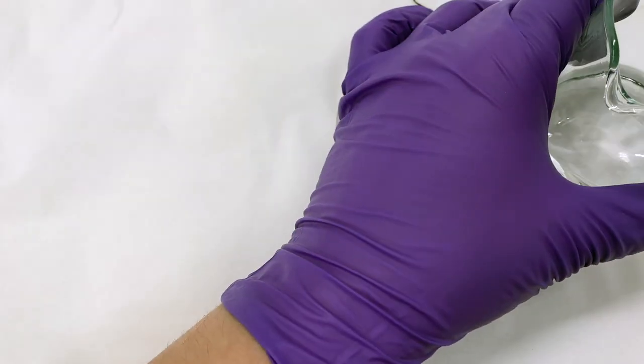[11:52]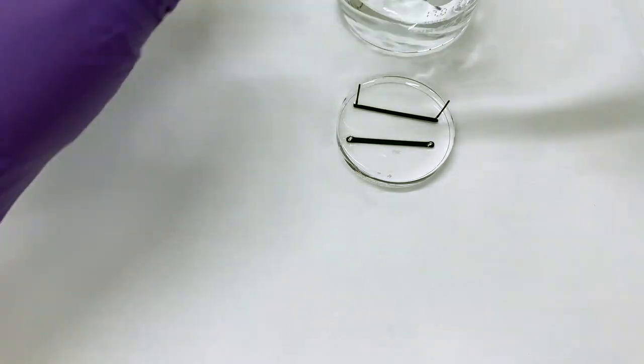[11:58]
Then, last but not least, and probably the most asked question ever, is how long it will take for dissolving my design. And this is really difficult to answer because it depends on how long your design is, how thin your design is, how much ABS you have in there, and a lot of different variables. I'm leaving this part here in real time, so you can check how long it will take if you just put a little bit of pressure. In the original part, we say that you can leave it in acetone overnight and it will work, but you can do also something very fast.
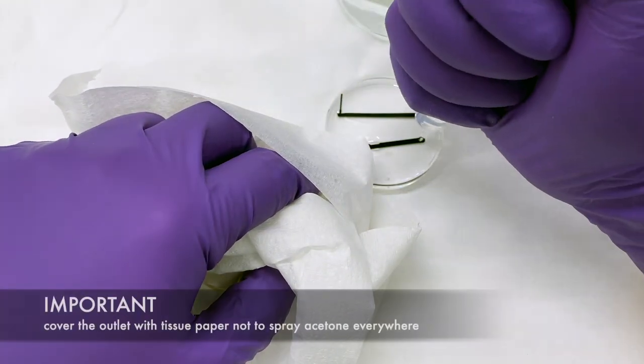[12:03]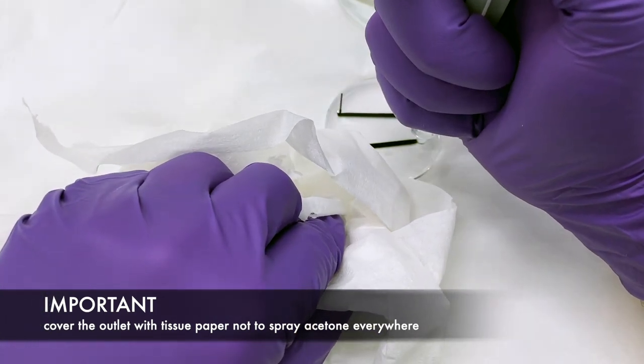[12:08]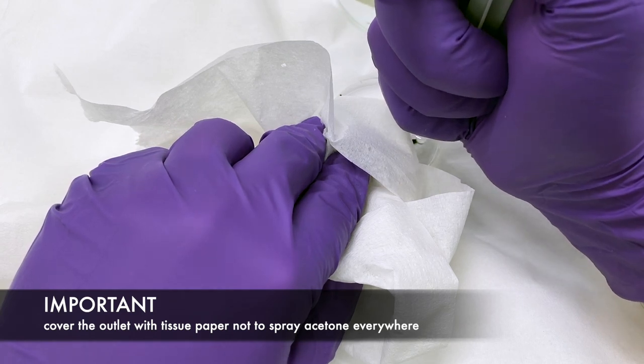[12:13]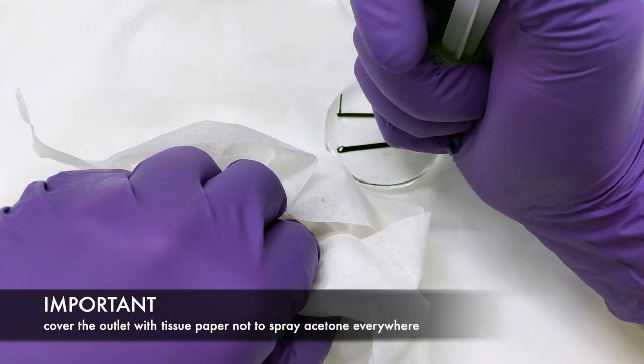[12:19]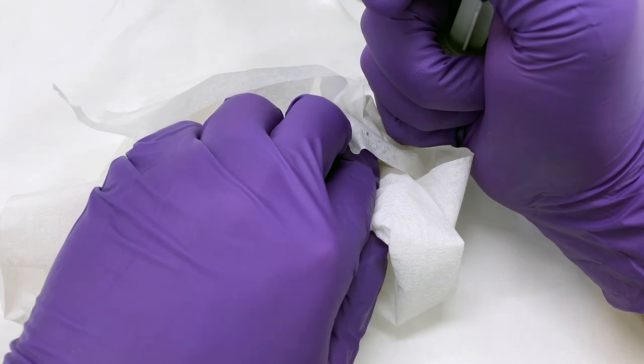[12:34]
So I have my design, I don't have the inlet and outlet anymore because I pulled the strings out, and now I'm just using a syringe for pushing some acetone through. So you just need to use a syringe without the needle, you need to have a little bit of pressure on the design and you start pushing the acetone through. You can see that after a few seconds I already breach the design and some acetone is pushing out. You can see here, and once you are at this point you just keep pushing and you will have your clean design in less than 10 minutes.
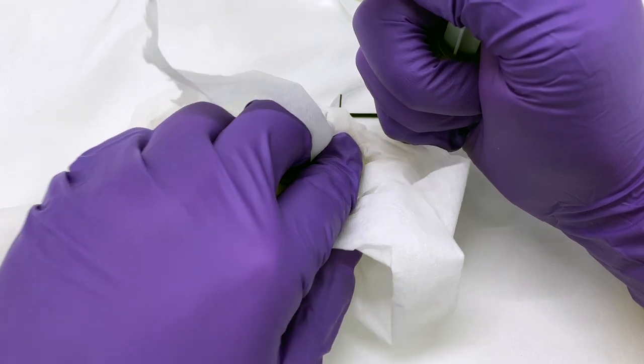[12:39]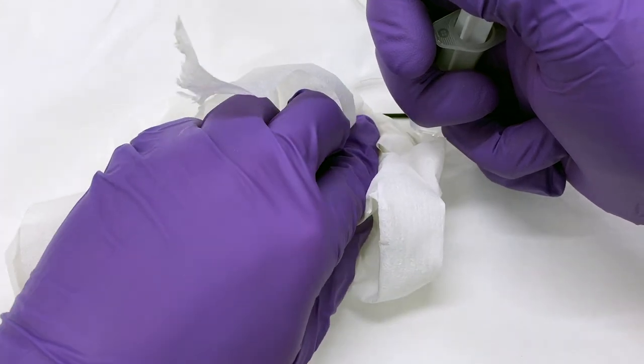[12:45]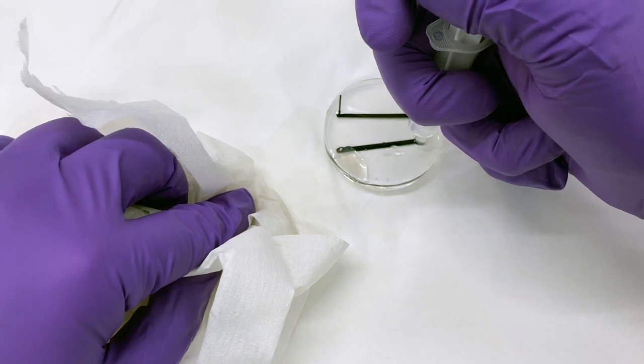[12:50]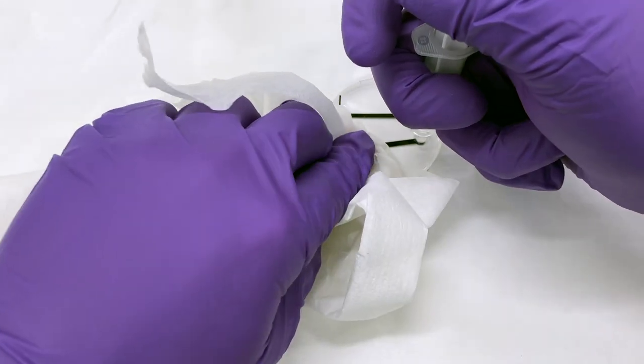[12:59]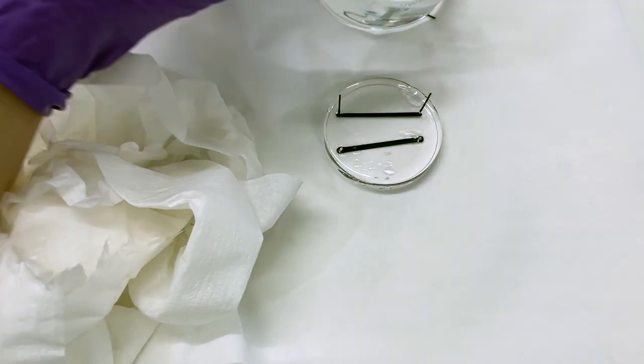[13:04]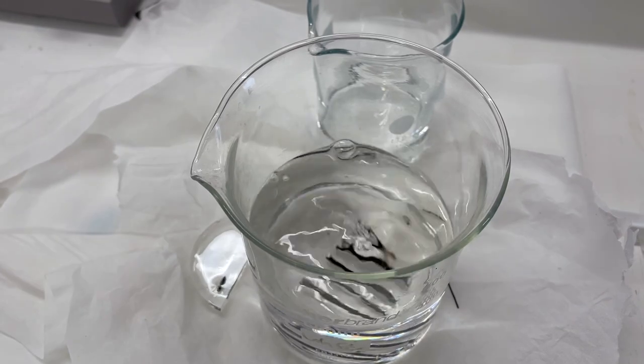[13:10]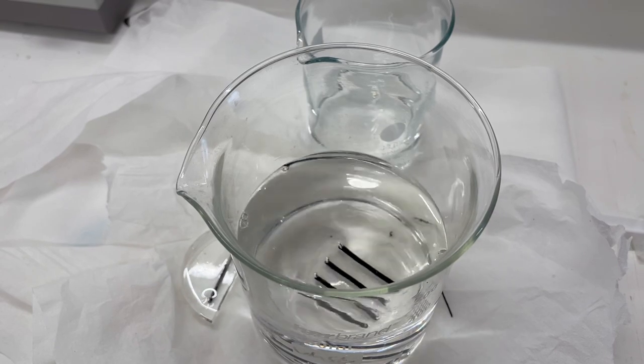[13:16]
So it's just a matter of having the first flow of acetone that starts dissolving your design, and it will be easier with time because the more material you remove, the easier it will be to push acetone through. So you can have a full design probably in less than 10 minutes. But again, it depends on how long your design is, if you can push it through or not. But this is doable in a few minutes. But then again, maybe it's the end of the day, maybe you're just lazy, you can just throw it in acetone, leave it overnight there, and the next morning most of it will be dissolved, you just need to push the rest out. Easy peasy.
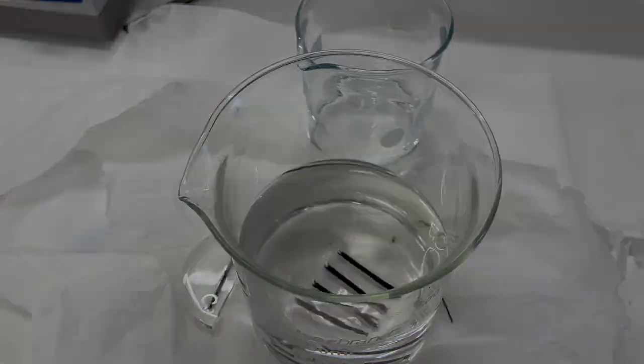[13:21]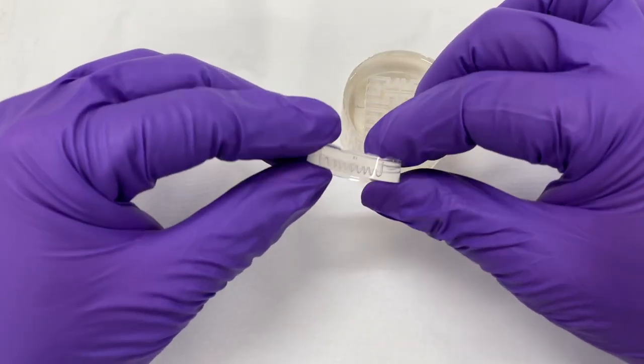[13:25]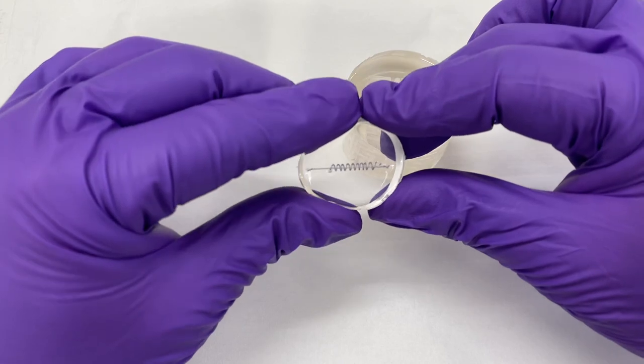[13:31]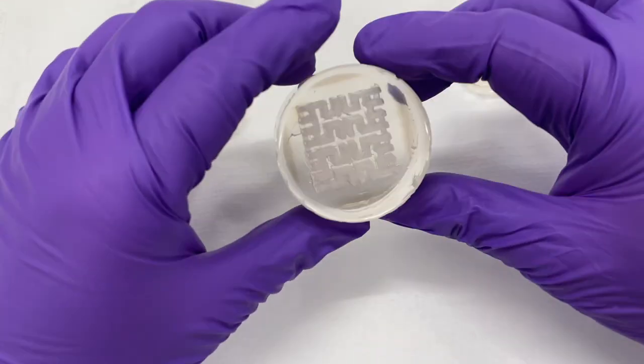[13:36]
And here you have them. The frequently asked questions about this method. It's really easy, it's simple, you can do it practically at home if you buy stuff from Amazon, and now you can do microfluidics everywhere. I just want to answer some of the questions that I get multiple times.